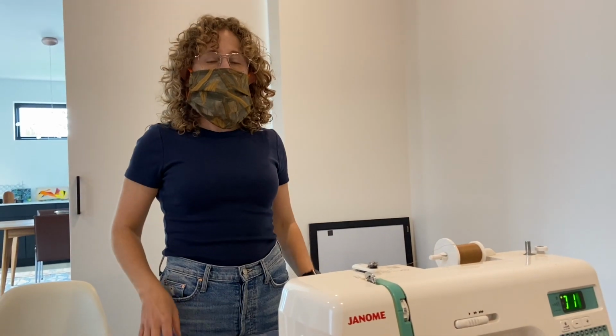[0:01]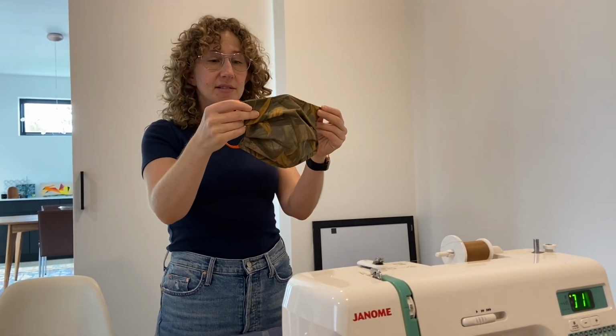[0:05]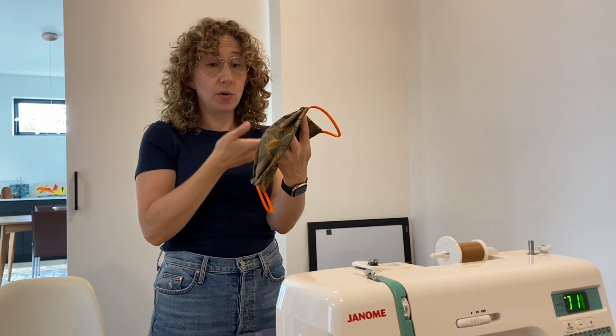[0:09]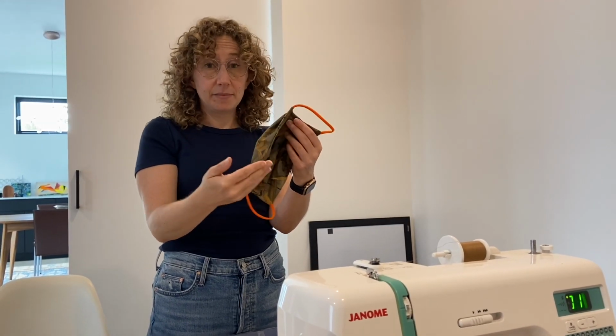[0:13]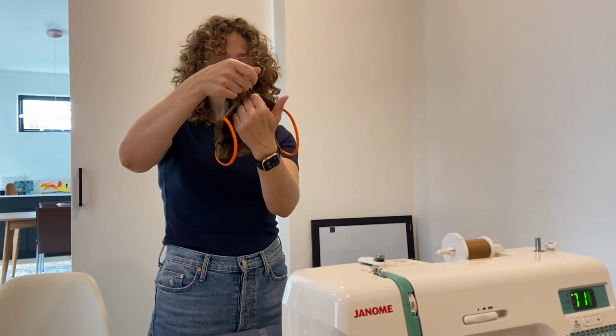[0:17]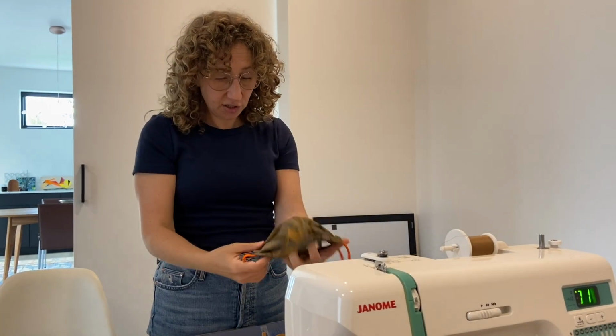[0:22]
Hi, I'm going to show you how to make one of these surgical face masks. There are a lot of variations that someone who owns this mask can put on it to make it fit better. This one in particular has a little cutout so that you can slip in an air filter.
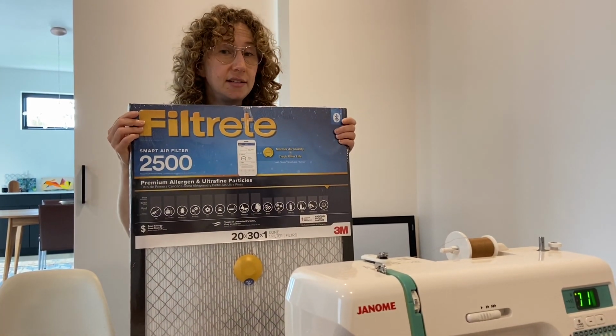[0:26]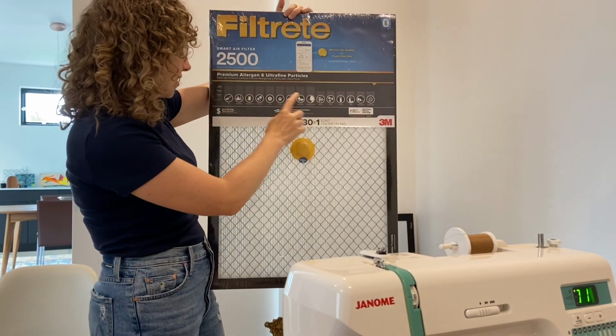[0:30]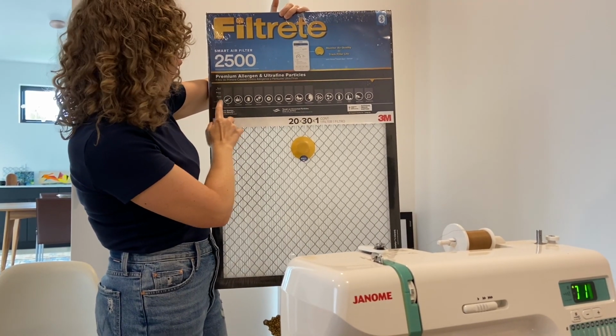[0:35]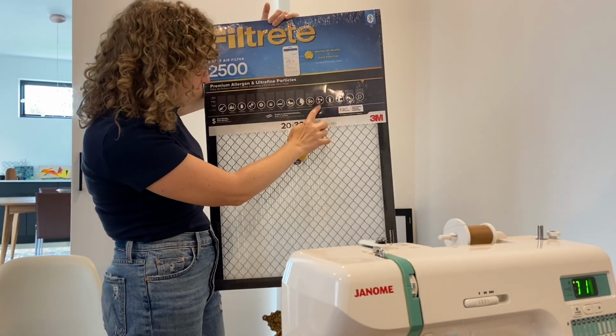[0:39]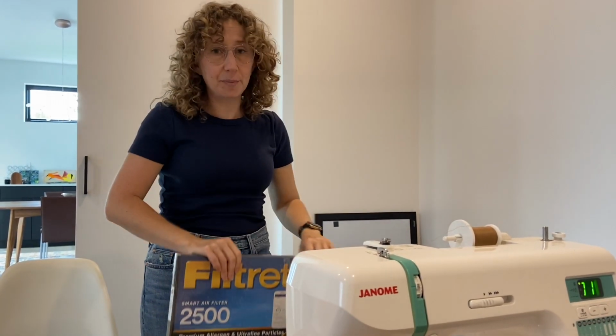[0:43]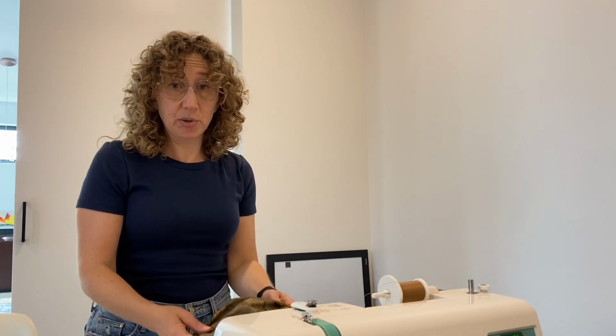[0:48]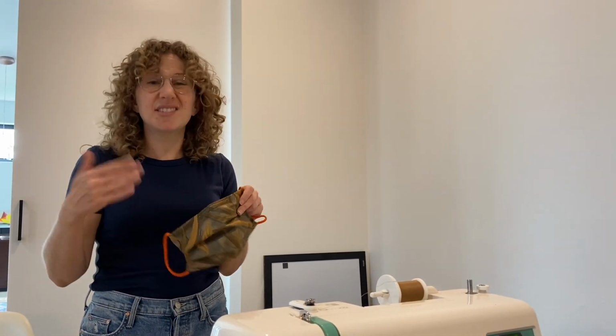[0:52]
The air filter that I'm using is this brand and the 2500 series because it says that it has good, better, best for all of these types of air particles, and virus is here and it's in the better category. A friend of mine who is an ER doctor has asked for those filters to be put in the mask, and I'm finding the mask is still breathable even with that filter.
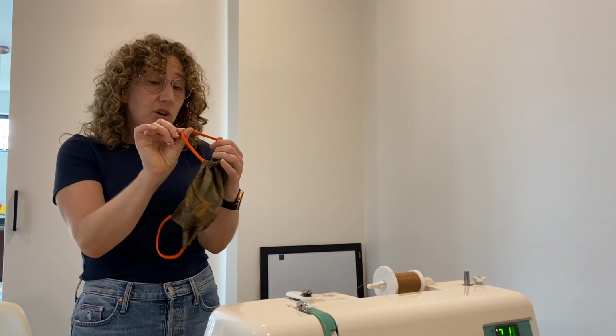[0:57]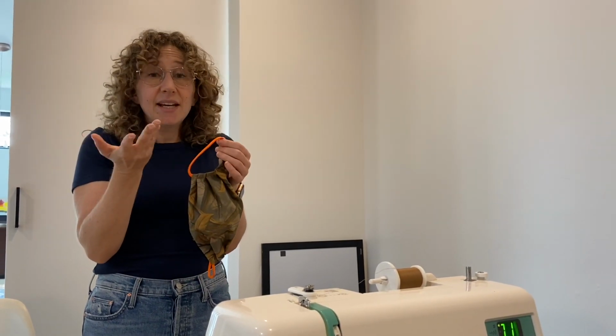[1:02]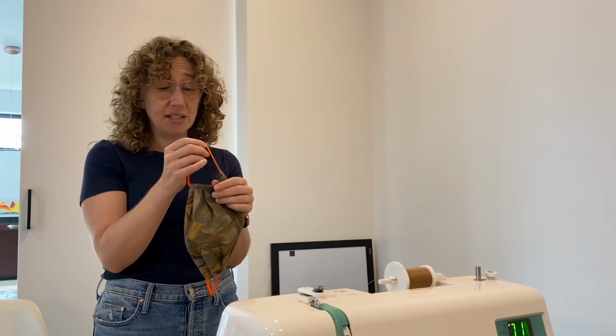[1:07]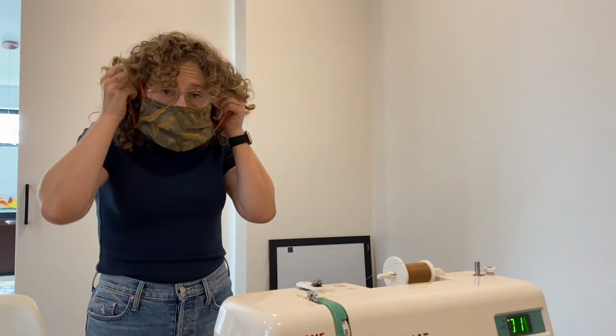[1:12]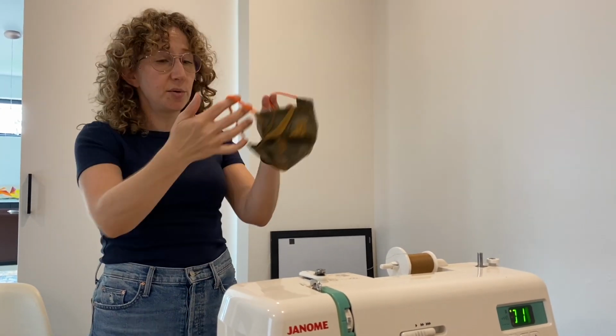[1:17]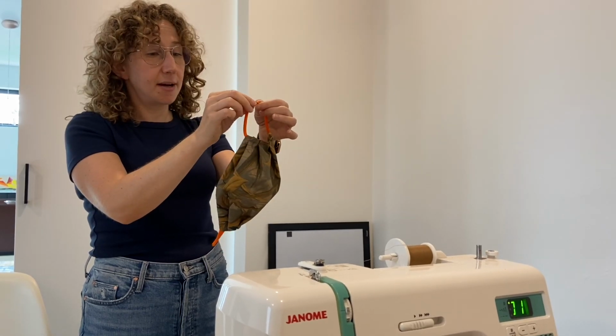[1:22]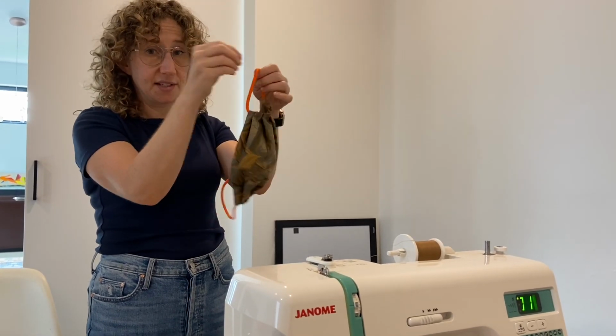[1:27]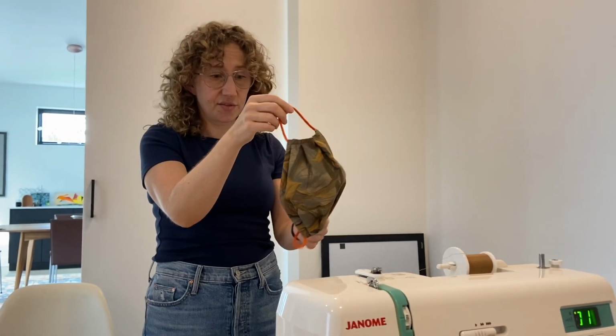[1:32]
I'm using these Lycra bands that someone gave me. Any kind of elastic, sewing elastic probably will do. It will have to stand up to washing. If this loop is too big, I have a very small face, I find this to be pretty loose on me, but I think it's good to sew them like this because someone with a bigger face or a smaller face, this is going to work. For smaller, you can just cut this loop and then tie it to the tightness that works for you.
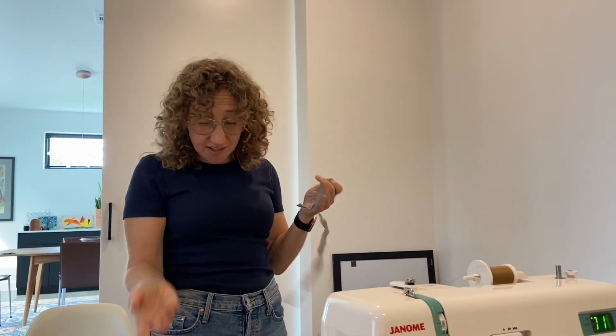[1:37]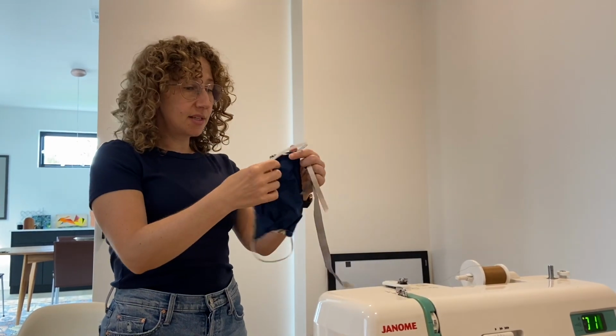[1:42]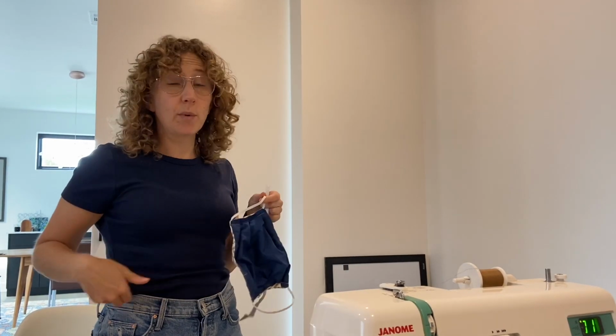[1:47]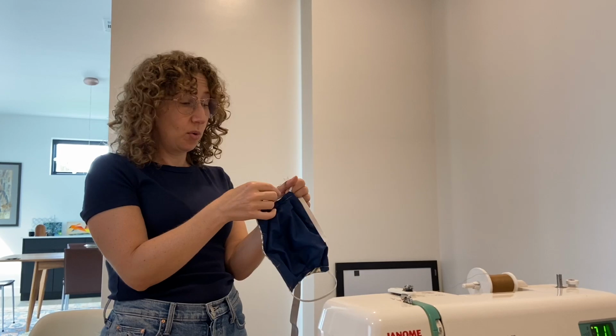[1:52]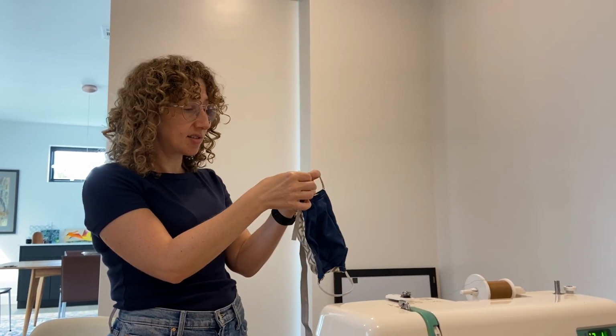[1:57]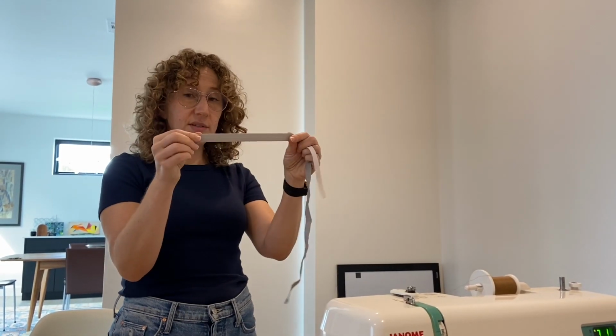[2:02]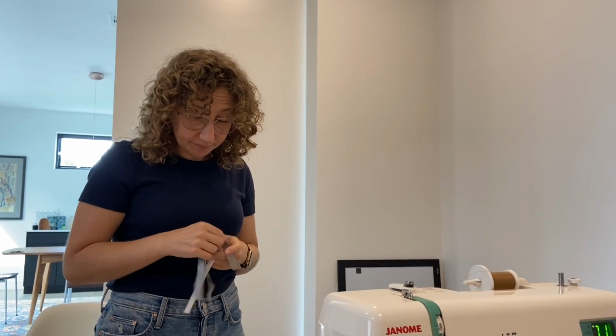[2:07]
Okay, so other types of elastic that I have used, I made this mask and this was 1/2 inch sewing elastic that goes in waistbands. I wanted to make it 1/4 inch so I could use more of it, so I cut it in half, but I don't think that's a good idea because it is starting to fray. Other elastic that you can use, I'm using bias tape, I think would be fine. Yeah, anything you can find.
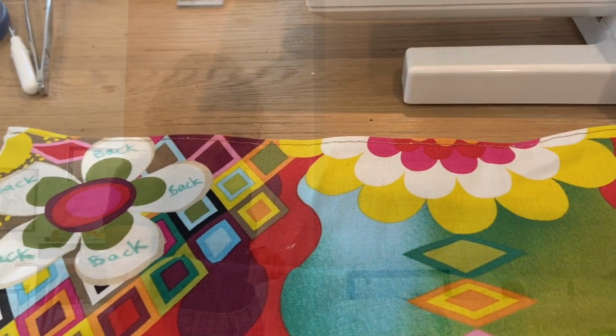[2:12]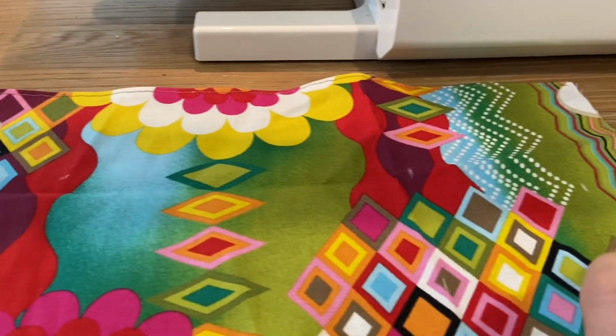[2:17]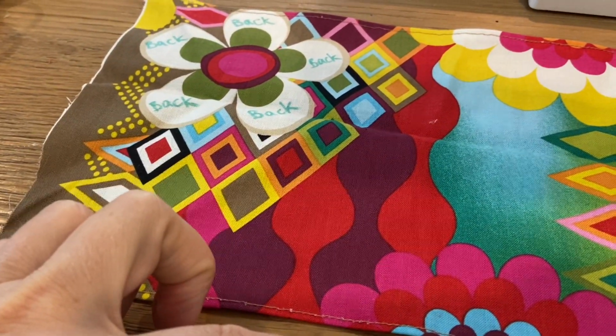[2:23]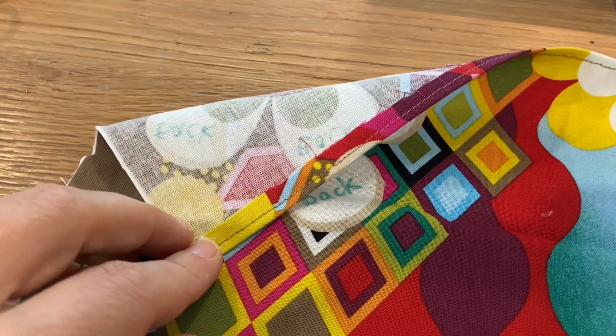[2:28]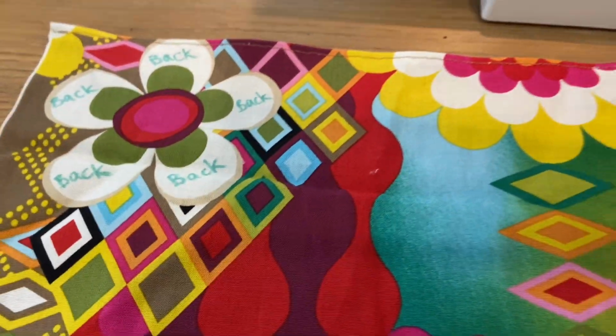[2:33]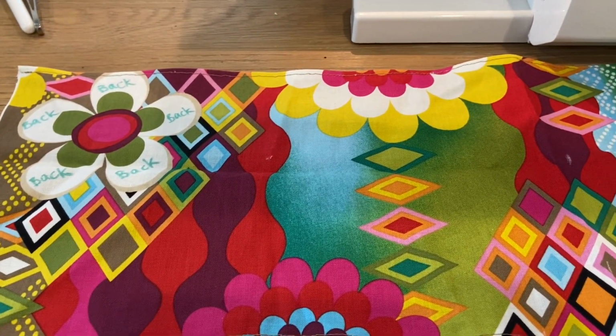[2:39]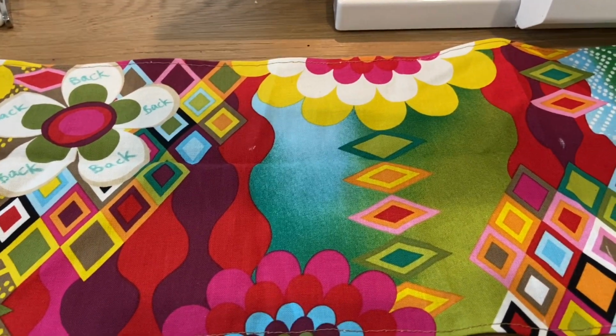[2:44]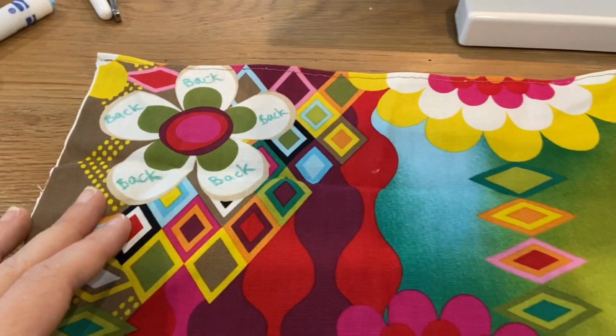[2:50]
Okay, so I have cut a piece of fabric that is 18 inches long and 7.5 inches wide, and I then stitched the long seams closed to finish them. Some people are saying it's better to have 2 different fabrics, one in the back and one in the front, so that people know which side goes on their face and which side goes outward. I find this easier for me, so I just took a fabric marker and wrote back on the side that's going to be the back.
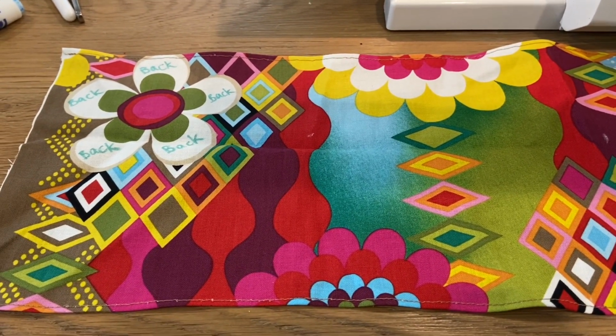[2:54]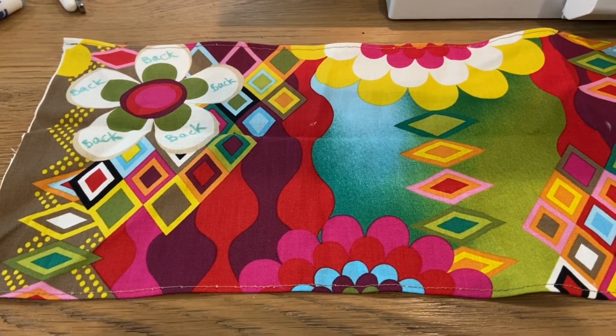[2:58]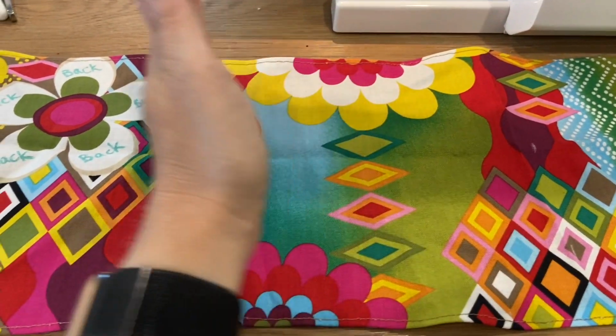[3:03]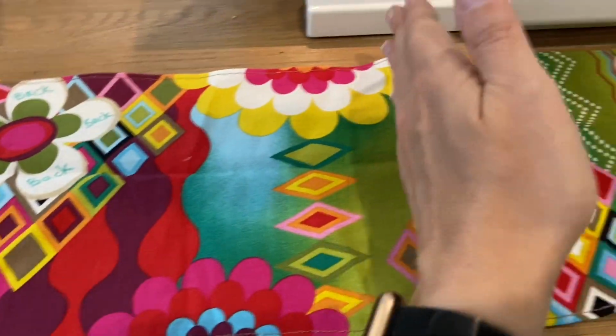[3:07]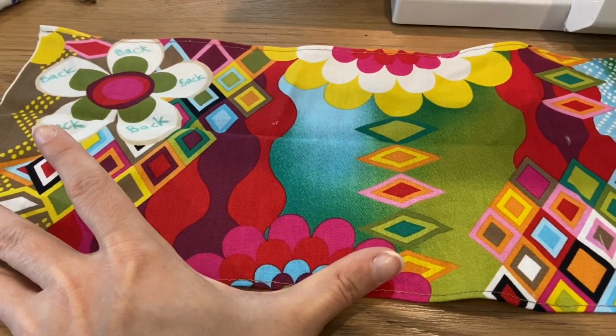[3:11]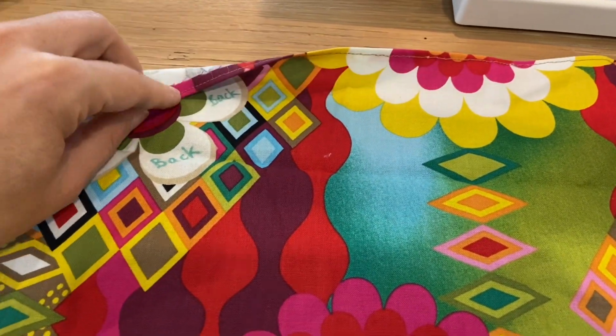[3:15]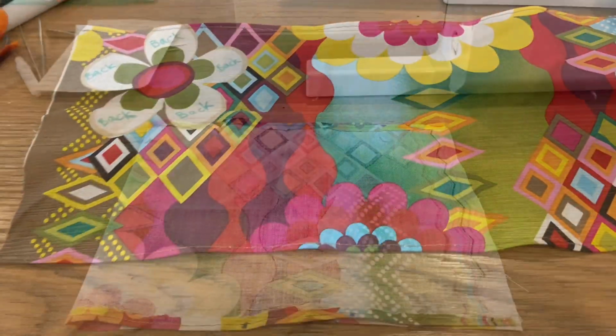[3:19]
But if you want to use 2 different fabrics to indicate that, you would just cut this in half, and one fabric would be of that type and this side would be the other type of fabric. So that would be 9 inches each and still 7.5. And the 7.5 is just to account for this seam allowance.
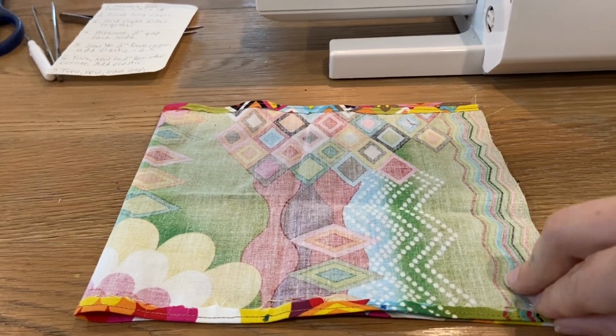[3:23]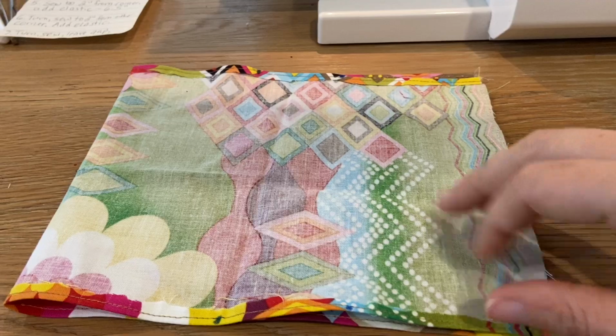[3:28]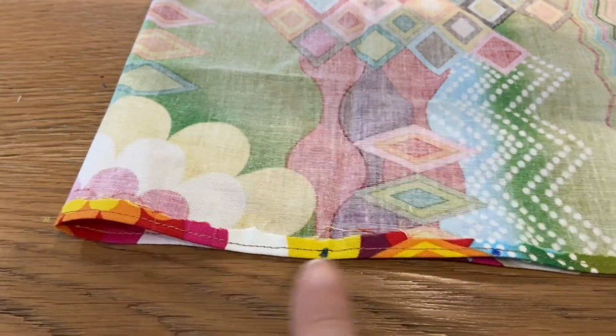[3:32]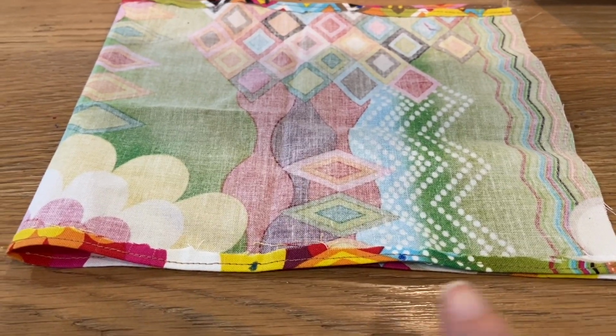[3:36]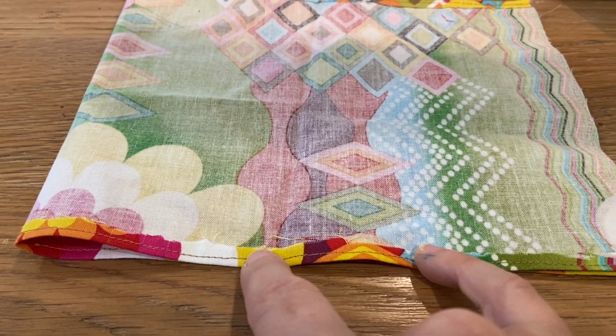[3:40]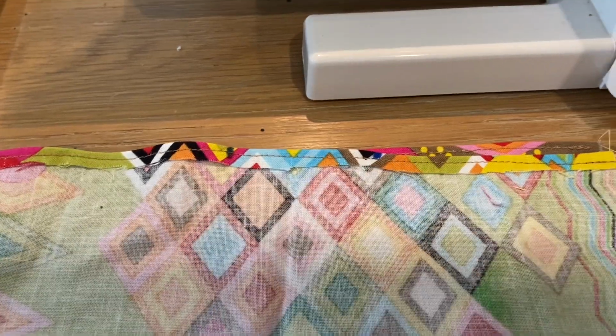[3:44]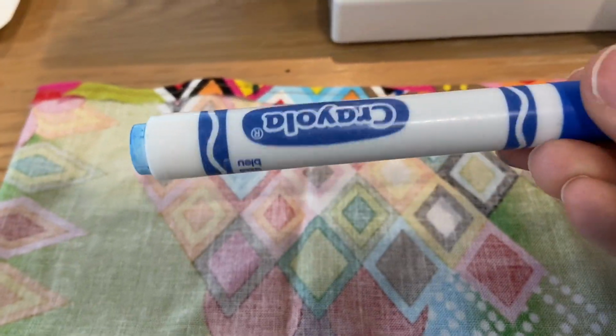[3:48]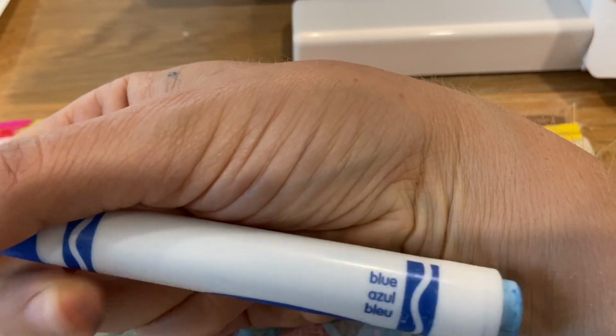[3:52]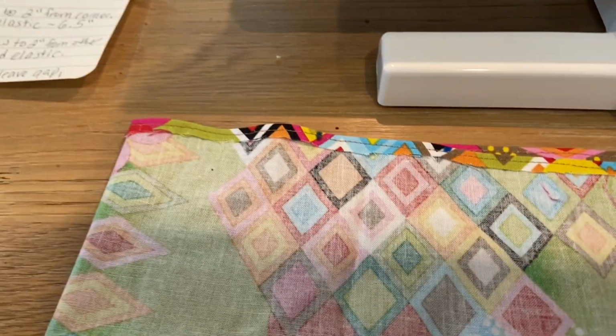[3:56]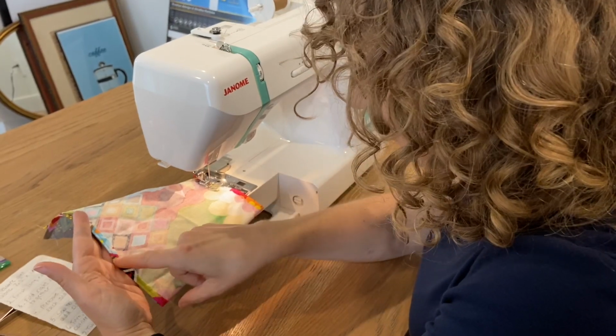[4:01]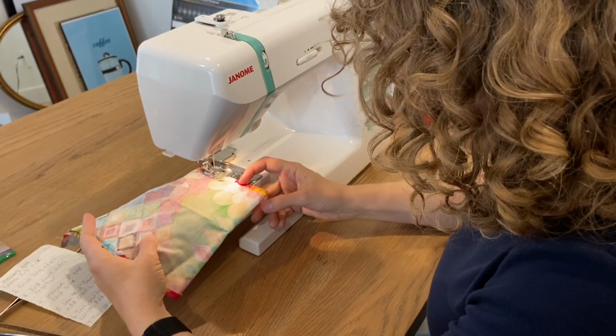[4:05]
Okay, so now I folded my piece of fabric in half with the right sides together, and I have measured and marked. This whole piece is about 8.25 inches, so I just measured approximately a 2-inch gap in the middle on the bottom and the top. And I just used a Crayola washable marker that my kids use because it should wash out in the wash, and if it doesn't, who cares?
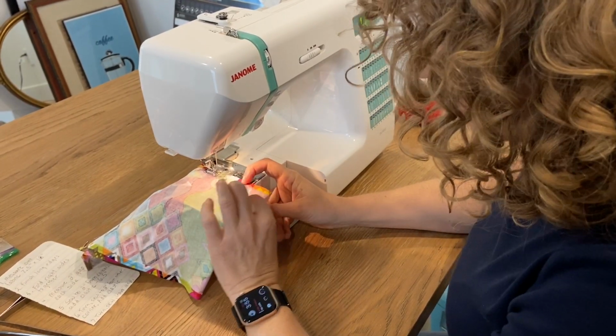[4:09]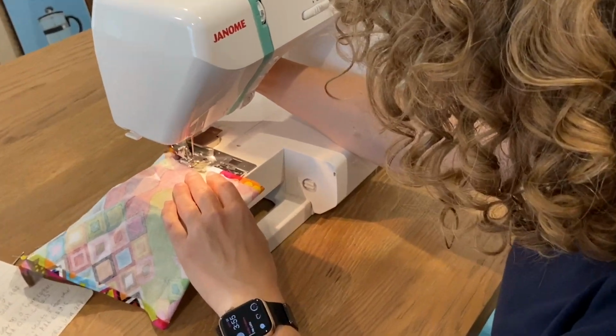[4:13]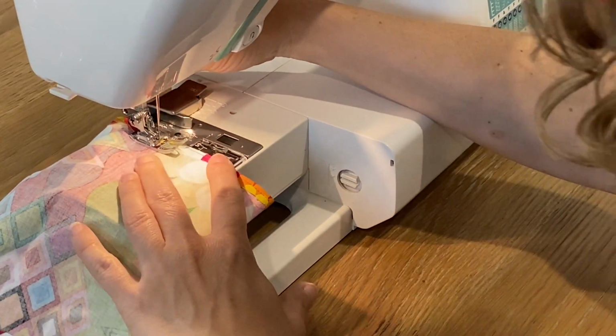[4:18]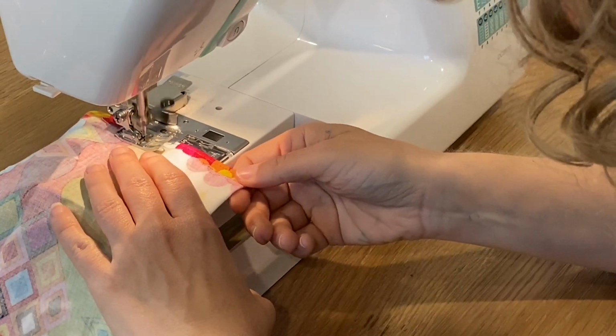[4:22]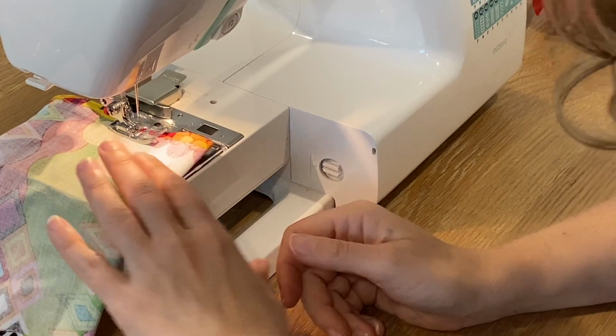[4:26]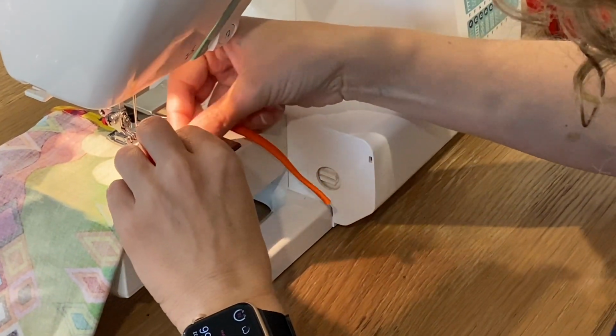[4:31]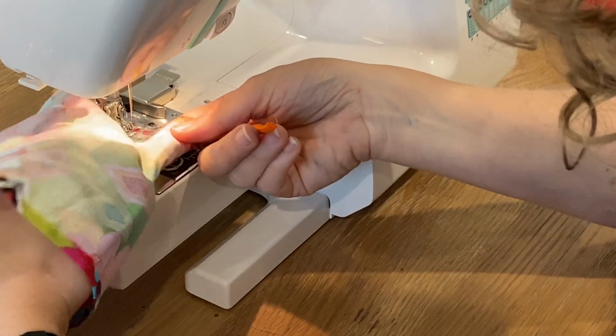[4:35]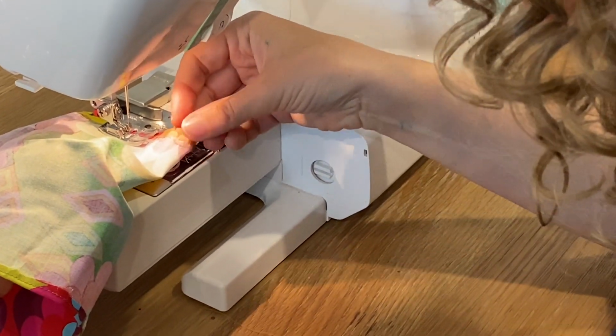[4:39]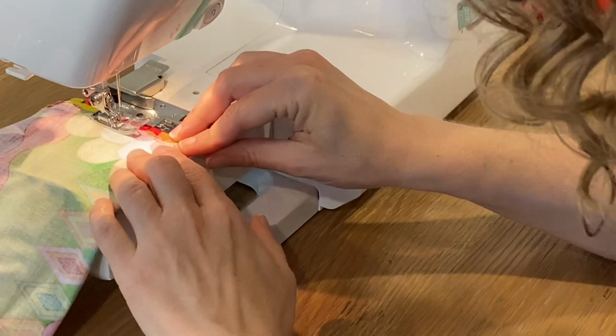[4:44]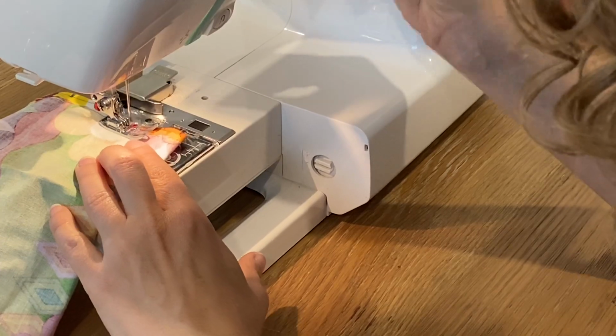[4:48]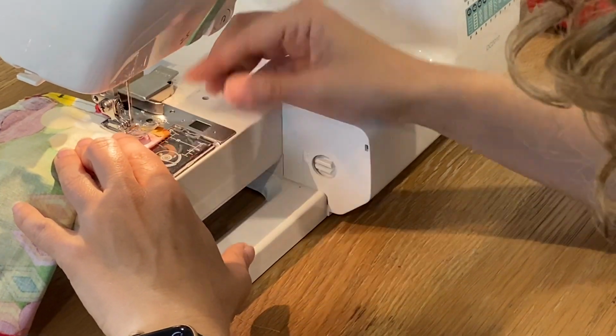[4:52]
Now I'm going to start sewing from one of my marks, and I'm going to sew to about, not very far because I need to leave myself enough room to insert the elastic. So I'm giving myself a 1/4 inch seam allowance, so that's just to the end of the presser foot. I learned the hard way that if you get too close to the end, it makes it very hard to insert the elastic. And just pulling the elastic to the end here. Then I'm going to back stitch over the elastic a couple times to make sure that it's really secure.
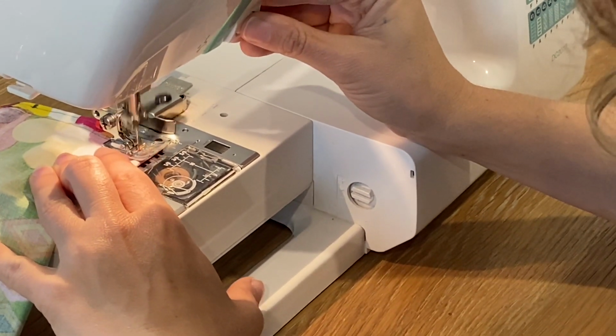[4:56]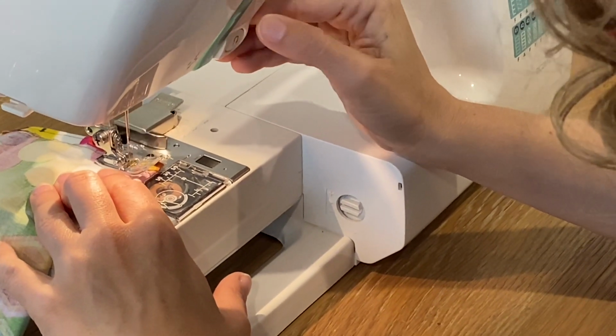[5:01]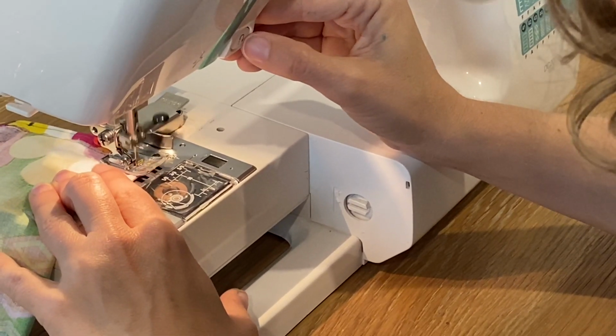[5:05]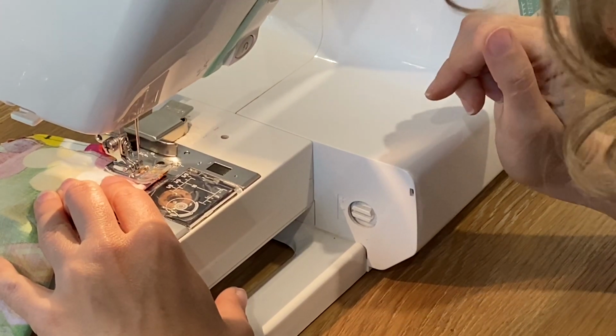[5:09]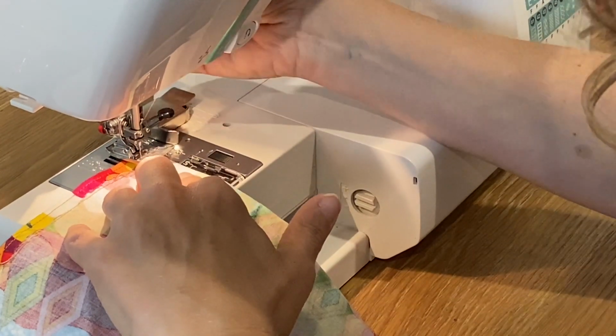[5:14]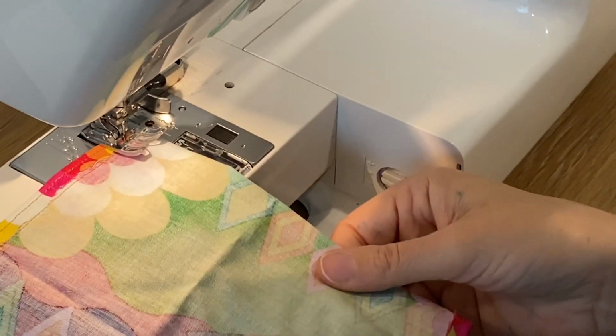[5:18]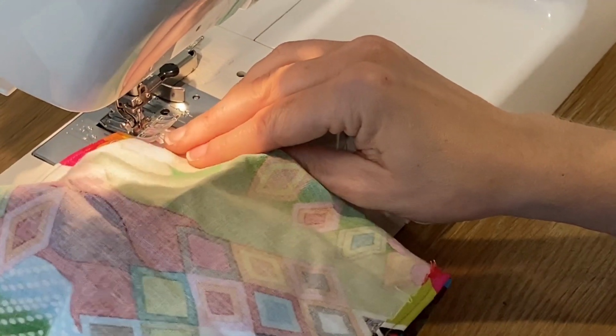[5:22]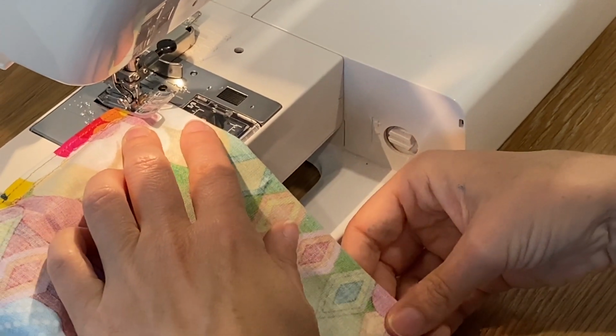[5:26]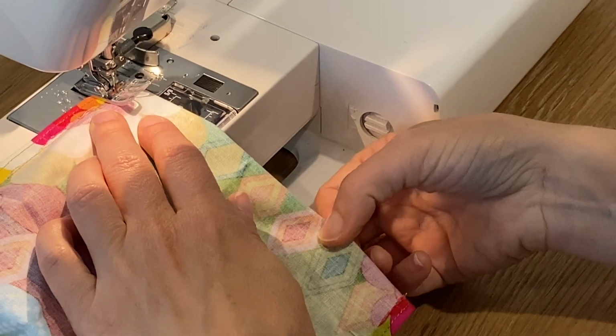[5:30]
I'm going to drop my needle, lift the presser foot, turn it, and then drop my presser foot, so then I'm back at a 1/4 inch seam allowance. Going to just push that elastic out of the way to make sure I don't accidentally sew over it. And then I'm going to go down to the next corner, and again, I'm going to stop around here.
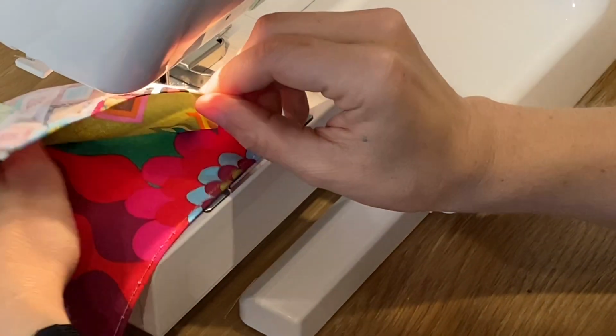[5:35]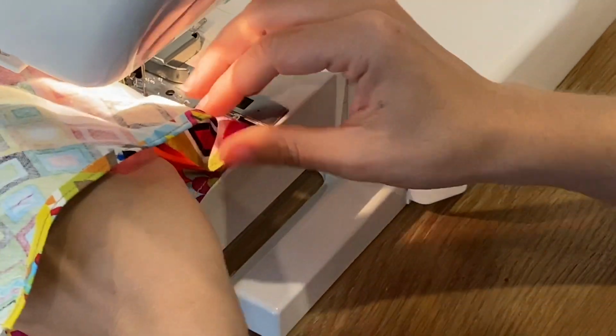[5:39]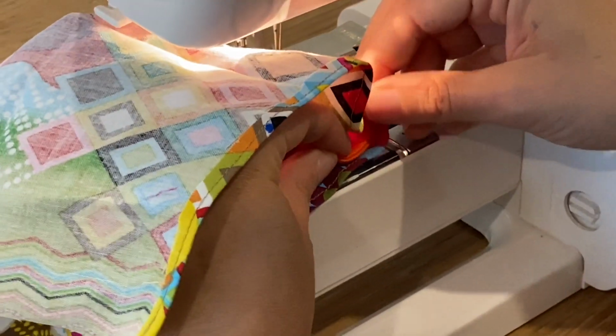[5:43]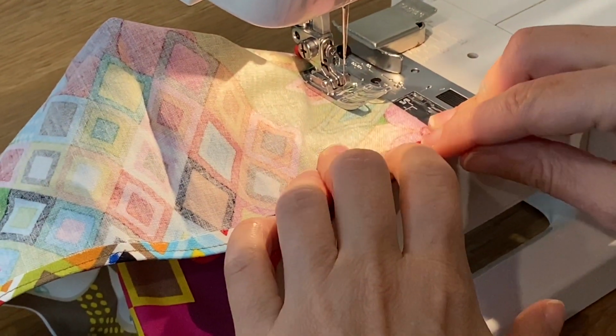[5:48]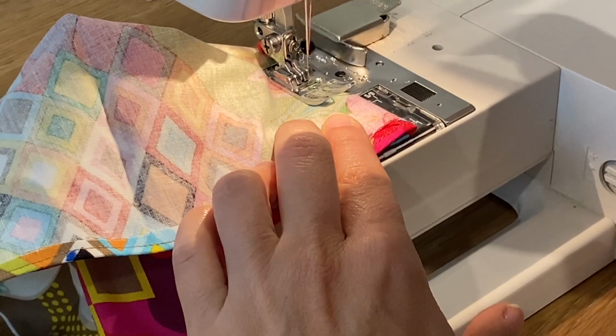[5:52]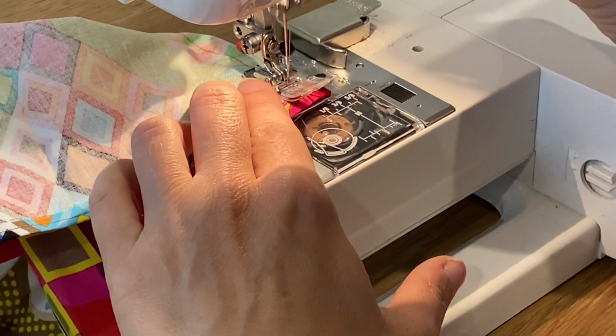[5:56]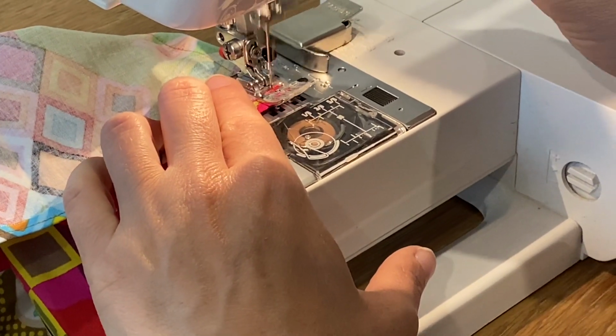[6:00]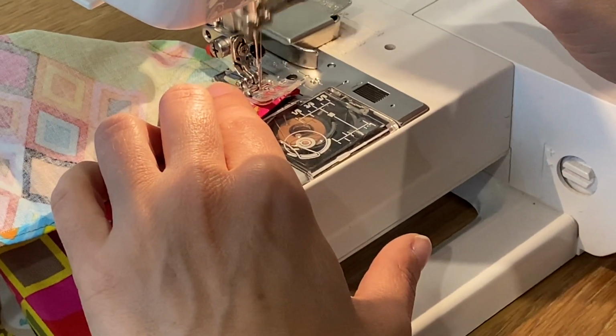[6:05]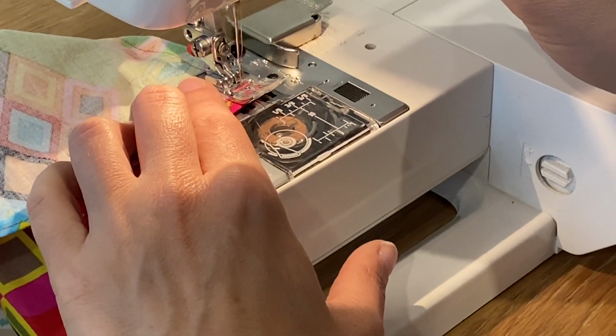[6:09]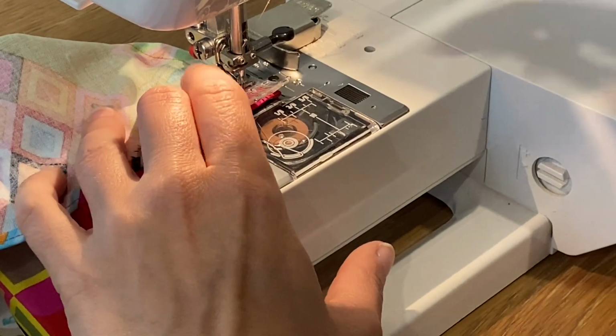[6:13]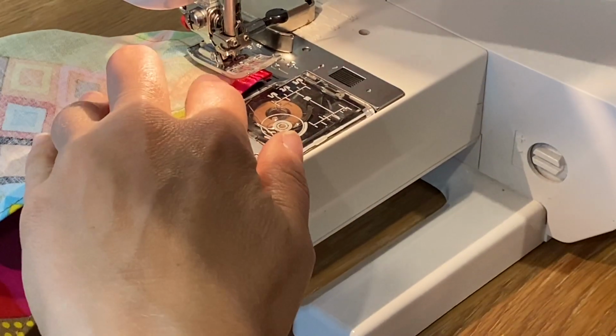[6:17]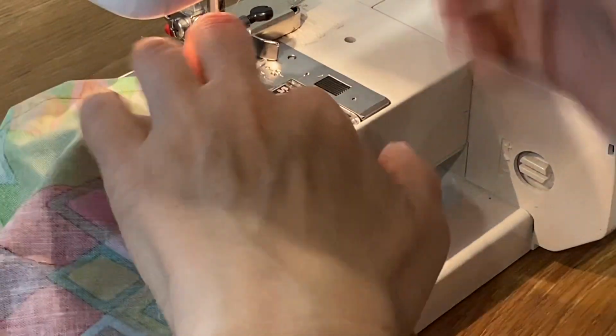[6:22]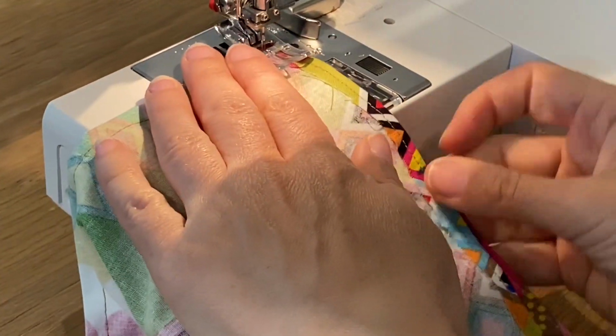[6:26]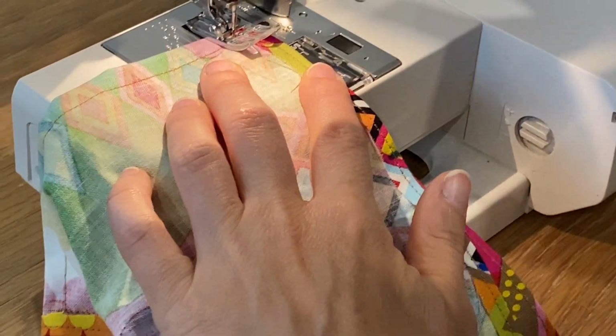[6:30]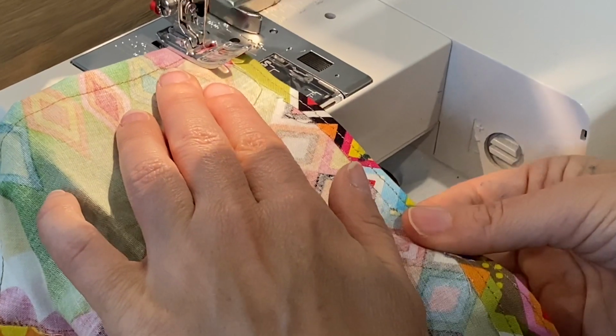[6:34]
Okay, now I'm going to take that elastic from the other corner and I'm going to put it into this corner. And I'm going to sew down. Oh, did I back stitch too early? Okay, I'm going to back stitch over it a couple times. Okay, I'm going to turn. Oh, need to go down one more turn of the needle. Okay, now I'm going to do the same thing, but I'm going to stop at this mark right here. And I'm going to back stitch when I get there.
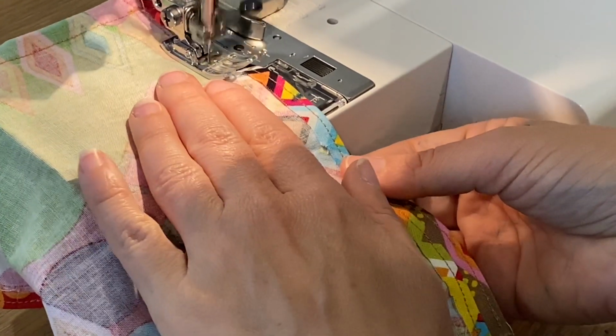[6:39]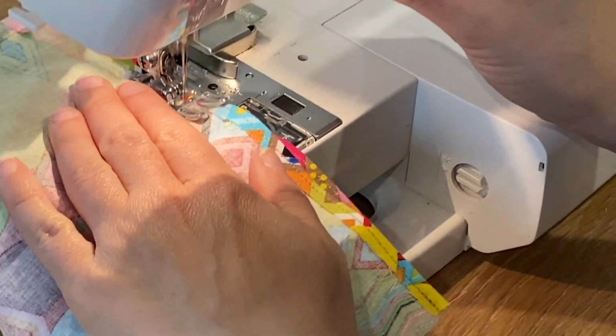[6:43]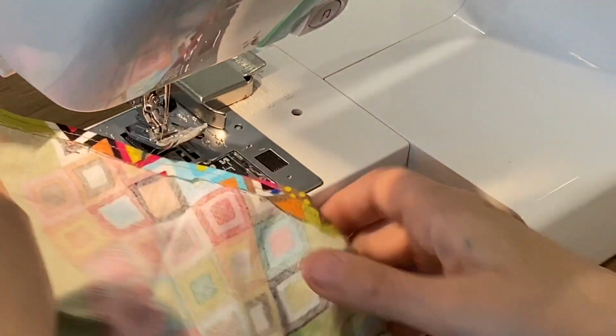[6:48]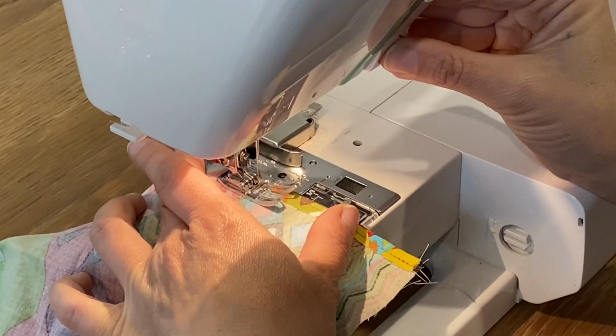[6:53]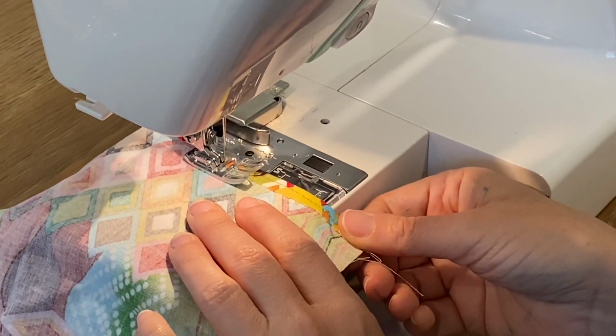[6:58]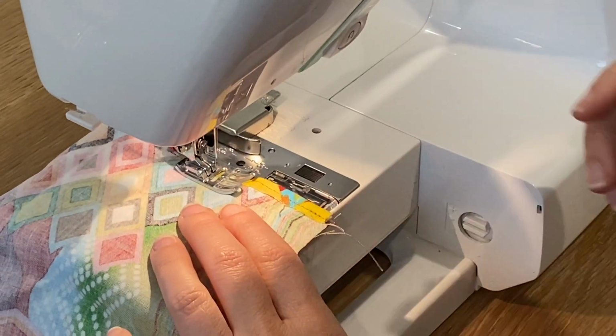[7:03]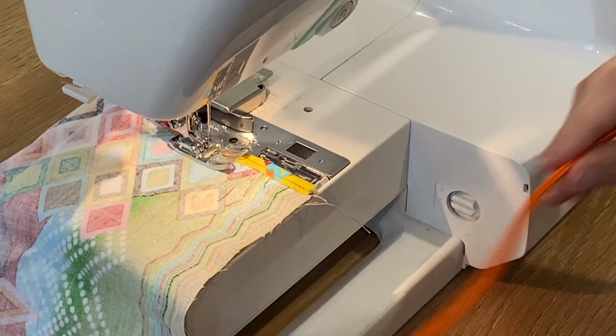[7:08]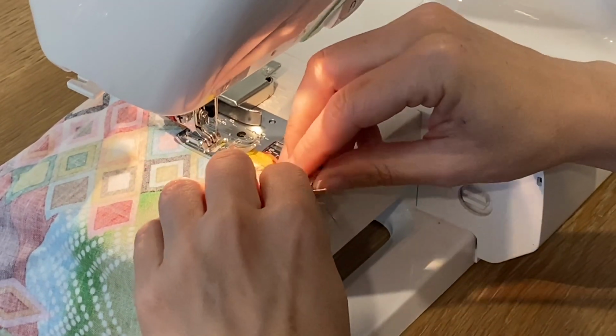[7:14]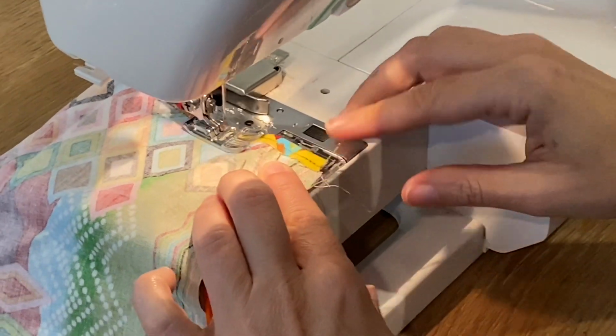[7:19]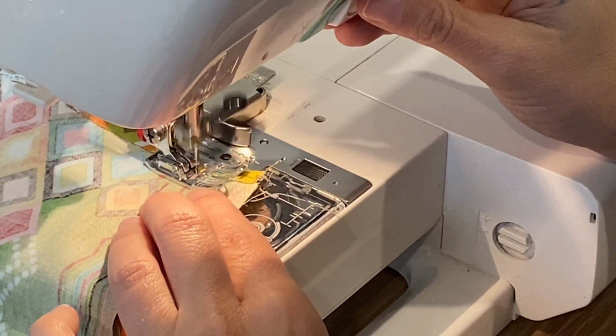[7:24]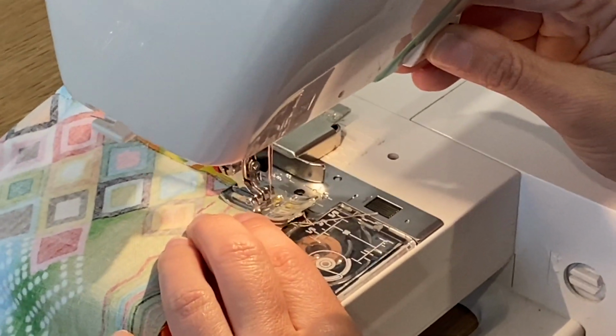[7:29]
Okay, I'm picking up after that gap. I started at my second mark and I'm just going to go a little bit down because I need to add my next elastic. So I'm going to stop right about there. I'm going to take another piece of elastic, put it in here. I'm not using pins, but you're totally free to use pins if it helps you. Same thing, back stitch over the elastic a couple times to really secure it.
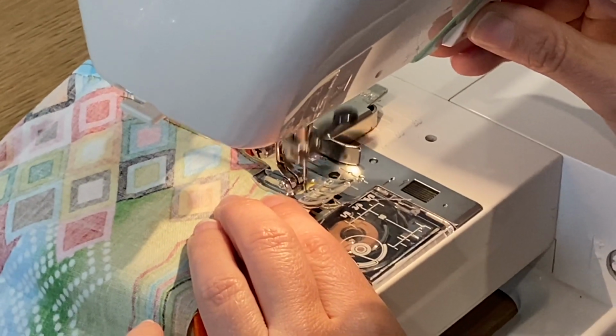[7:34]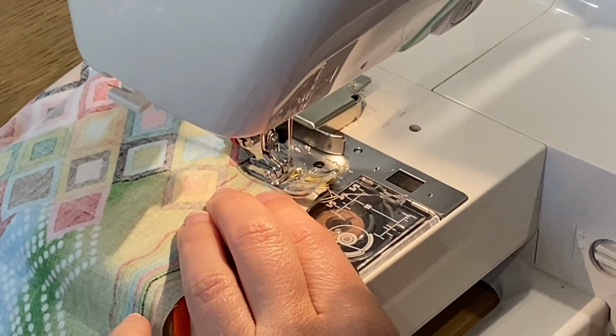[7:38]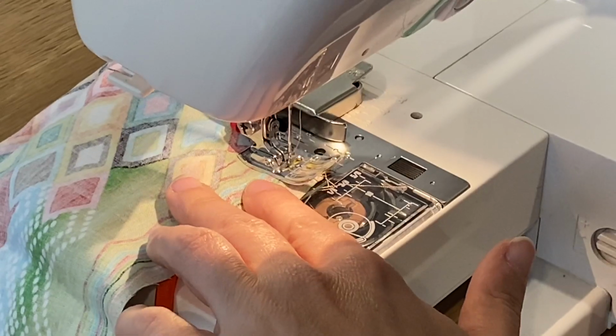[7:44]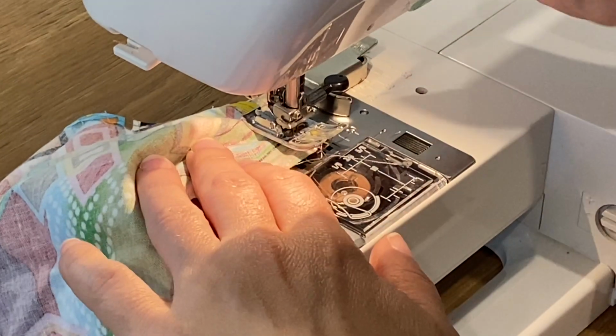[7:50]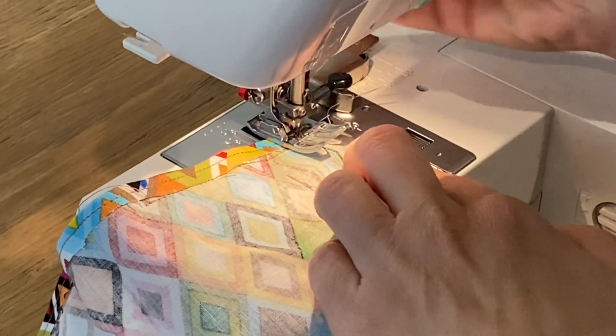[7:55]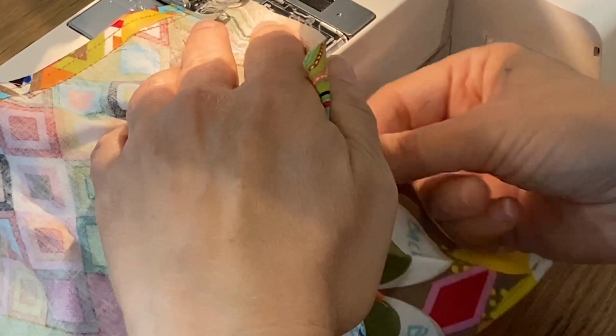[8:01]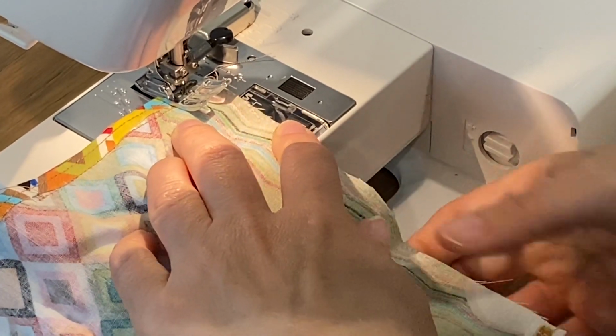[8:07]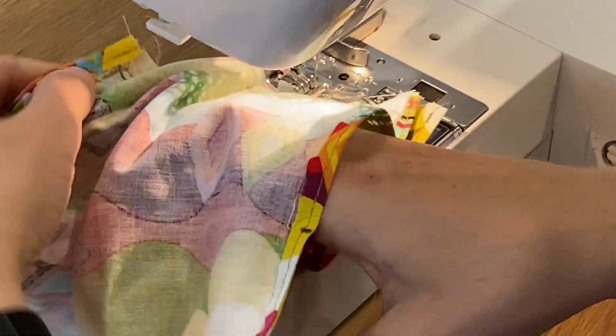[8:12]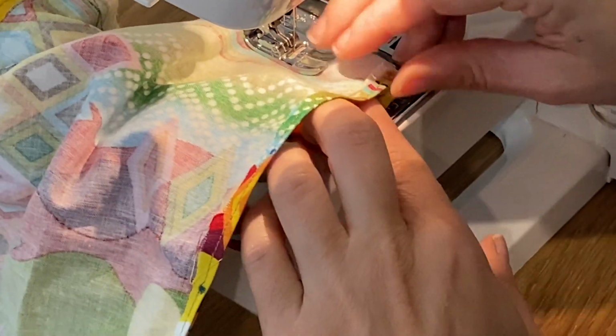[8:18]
Okay, and drop your needle. Oh, looks like I need to do it one more time. Maybe even one more time. Okay, and make sure again to get your elastic out of the way. Line these up again and sew down until I'm about here. Okay, now I'm grabbing the elastic that I had just sewn into the corner and I'm pulling it down to secure it into this corner.
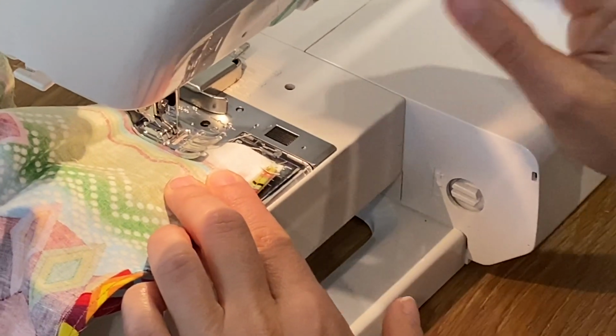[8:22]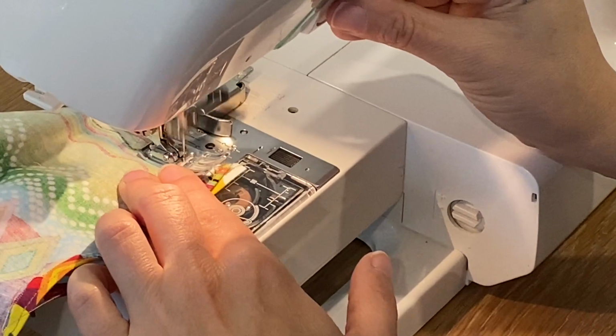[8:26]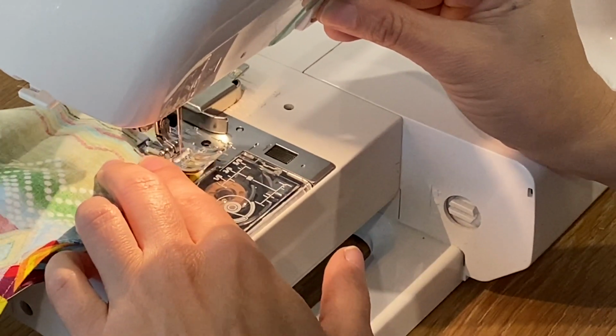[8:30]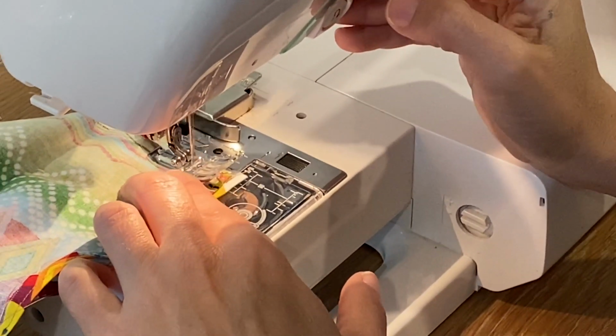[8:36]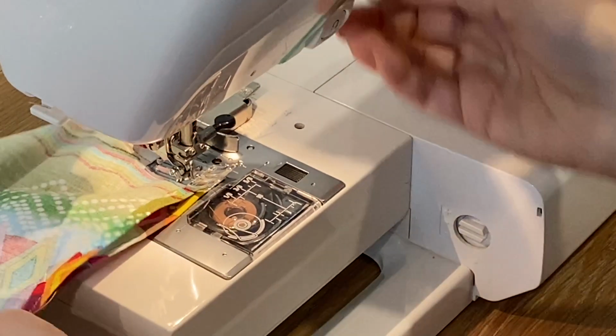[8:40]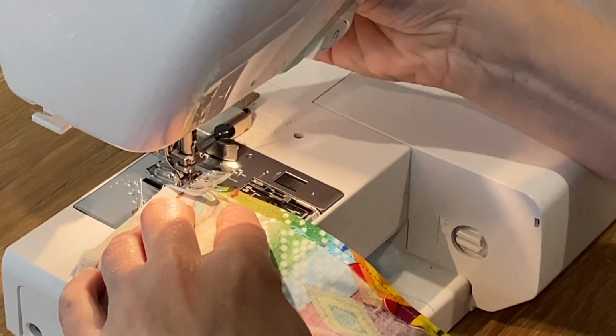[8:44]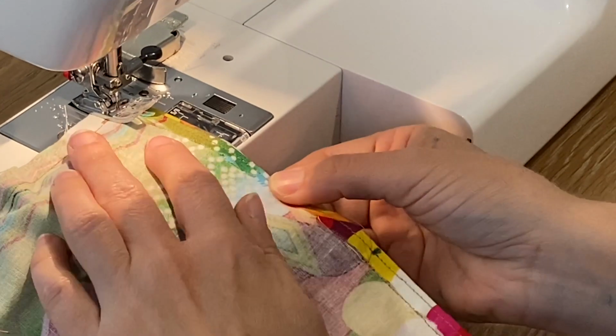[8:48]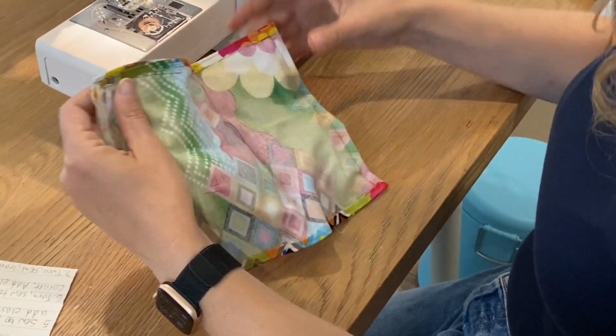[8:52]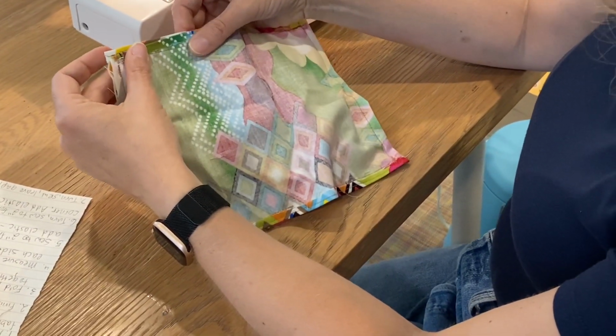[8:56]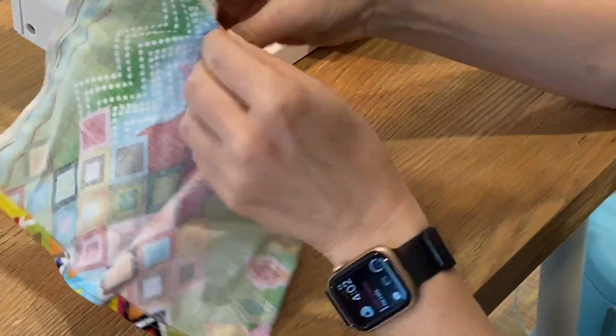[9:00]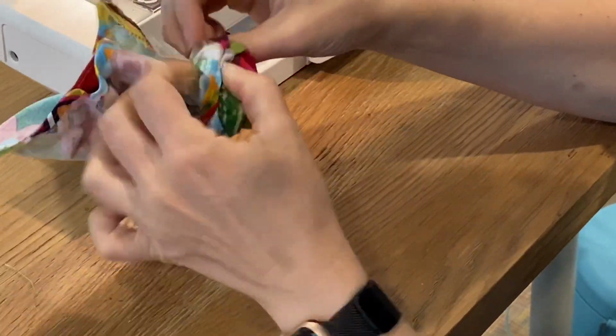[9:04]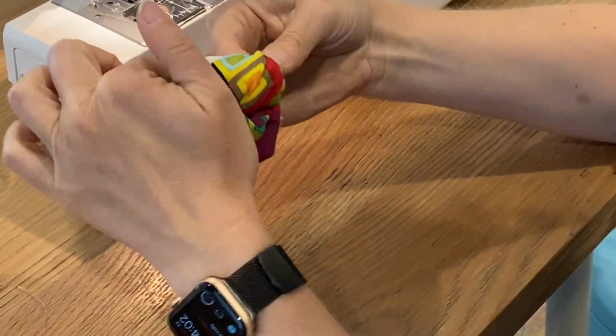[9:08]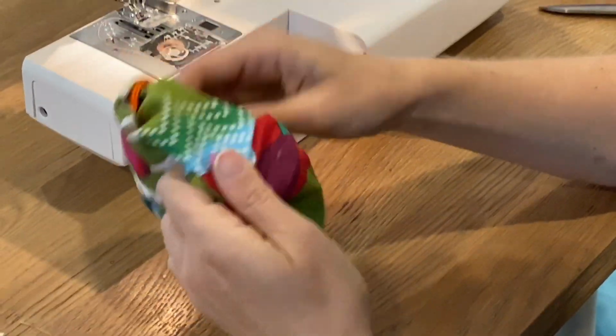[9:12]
Okay, now I'm gonna sew down to this gap. Okay, so I finished sewing to the gap, and of course I back stitched right when I got to each gap. Now you're gonna flip this inside out. Now for some reason, I thought I left enough, and maybe I did, but they are pretty small gaps. Well, I guess it turns out pretty easily with those 2 inches.
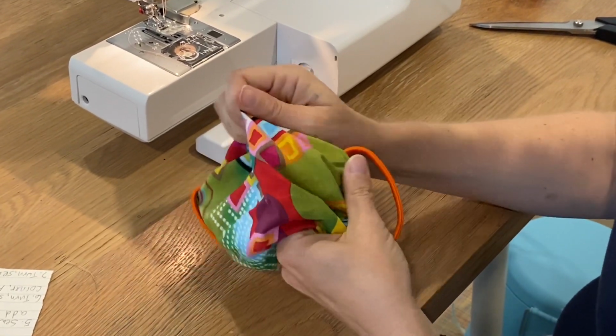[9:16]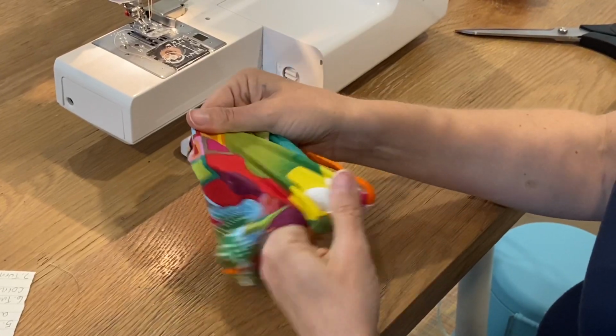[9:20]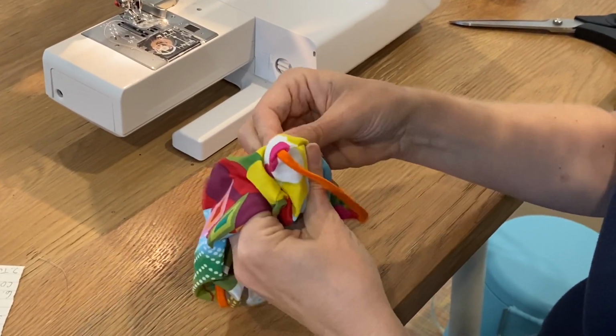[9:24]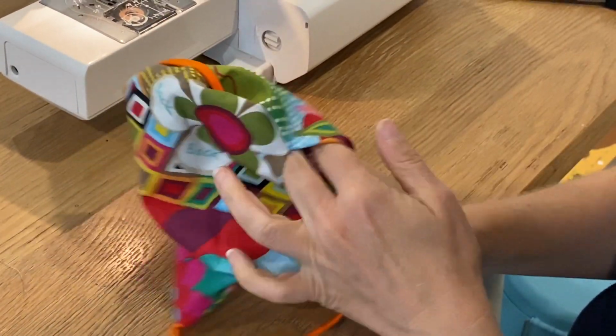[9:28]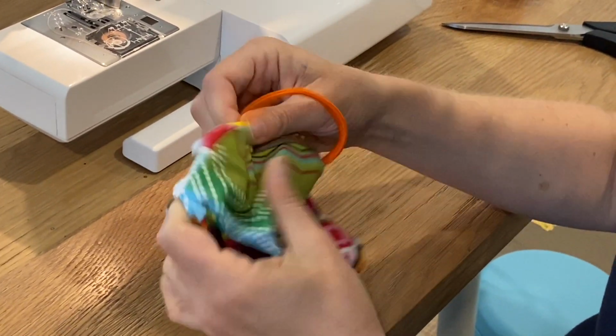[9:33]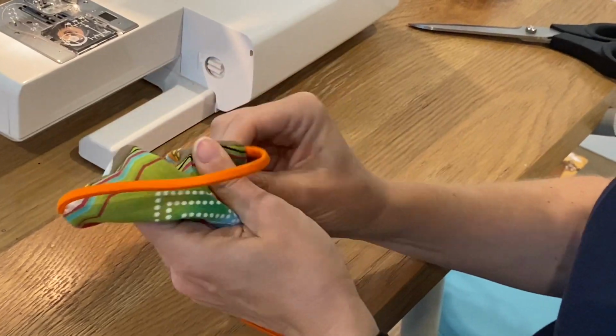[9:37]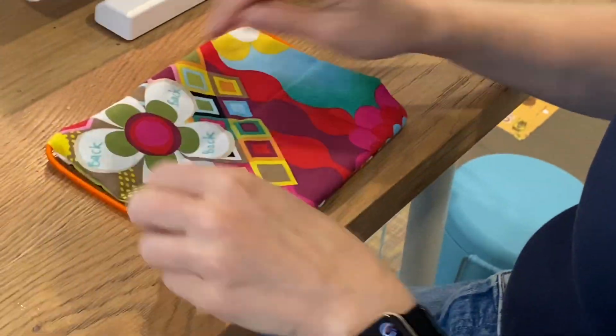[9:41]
So I'm turning them now right side out, pressing into the corners with my finger to really get that out, pressing the seams open with my fingers on both sides. Okay, this is going to be the mask.
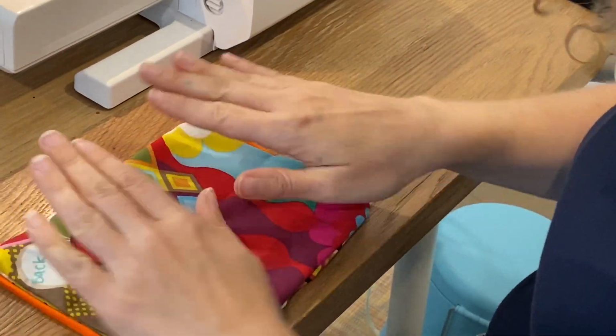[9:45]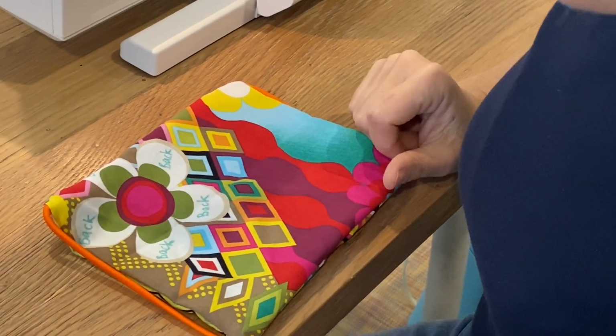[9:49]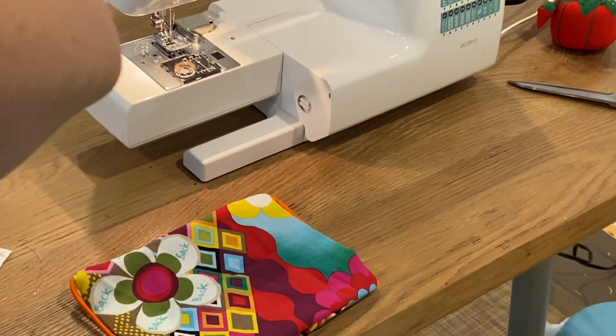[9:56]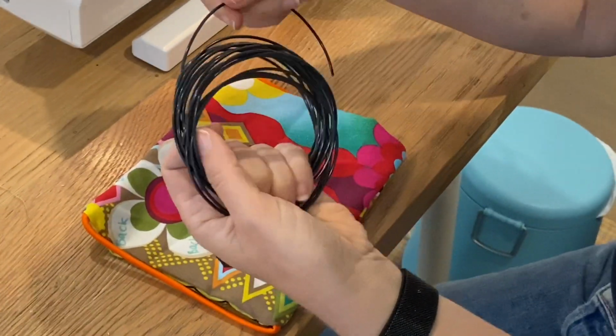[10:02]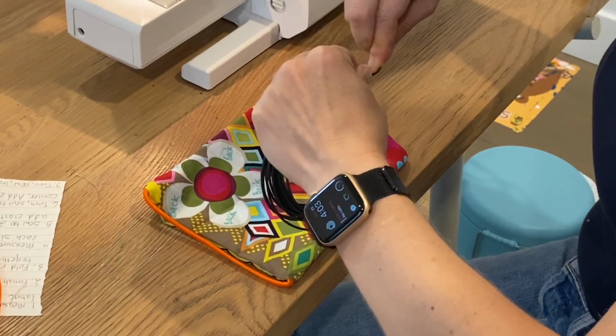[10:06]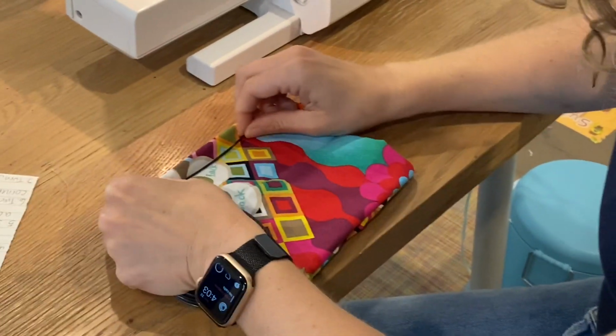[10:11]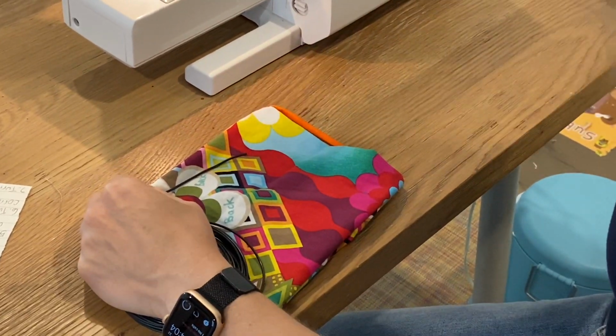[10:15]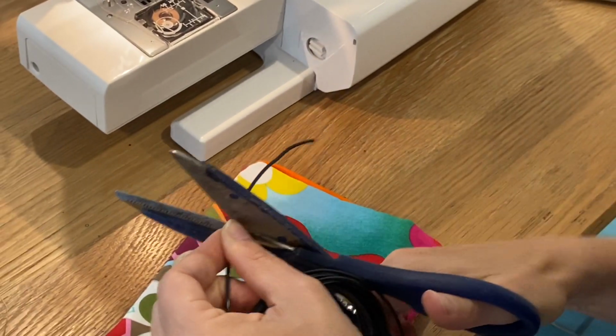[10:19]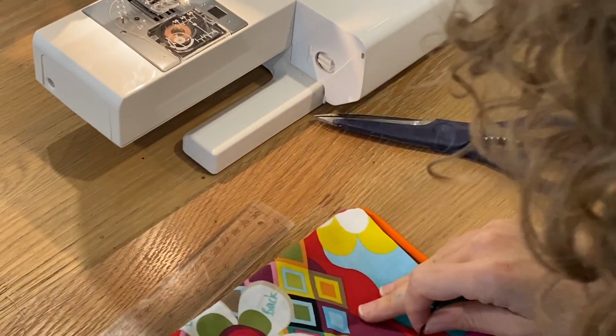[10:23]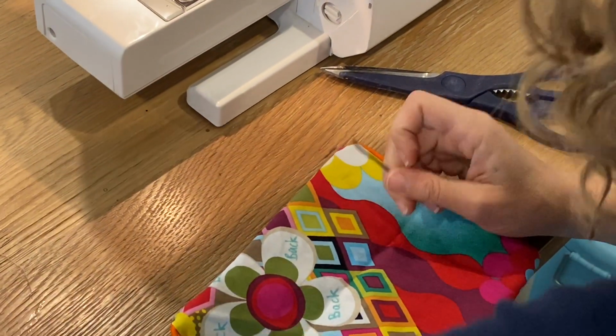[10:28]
Now, I am going to cut a piece of little bendable wire that I just had lying around the house to use as the nose piece. So, let's see, I'm gonna straighten this out a little bit. This was just in a craft kit for my kids. I think I'll do it to here. So that's like what, 3 inches? Let's see. Yep, just about 3 inches.
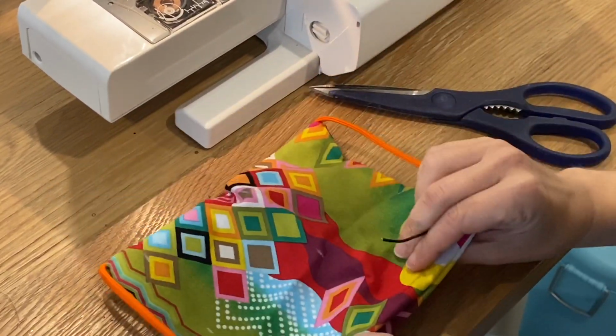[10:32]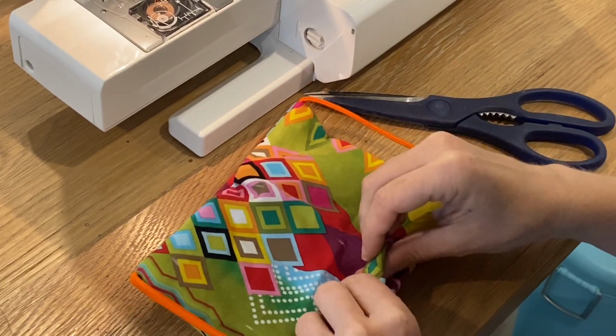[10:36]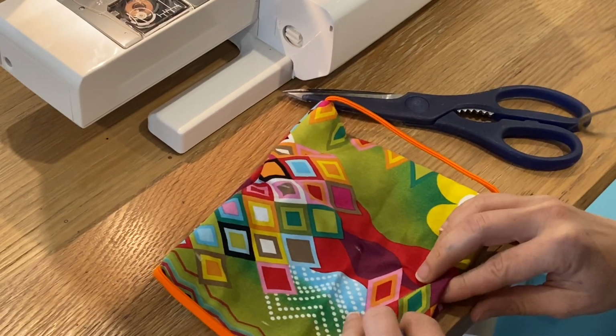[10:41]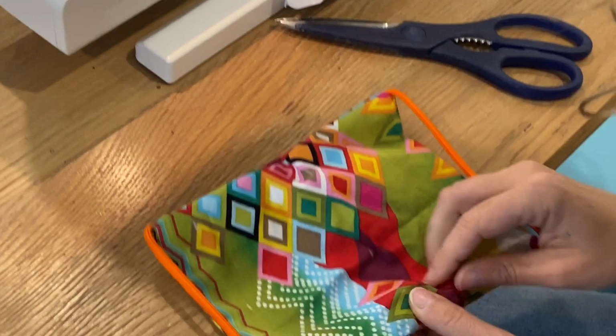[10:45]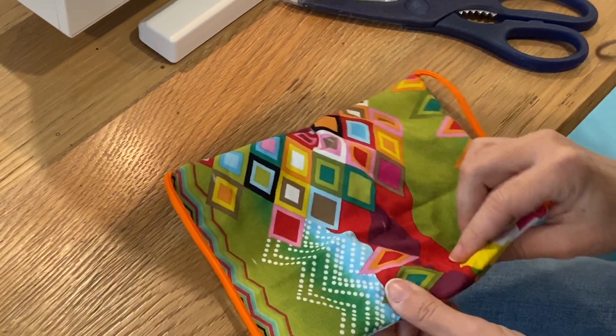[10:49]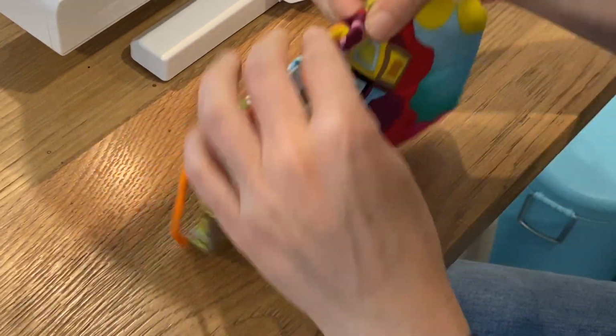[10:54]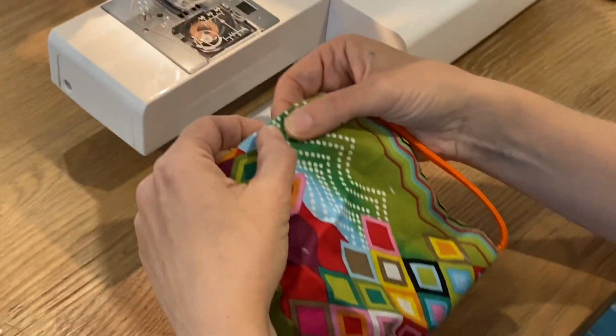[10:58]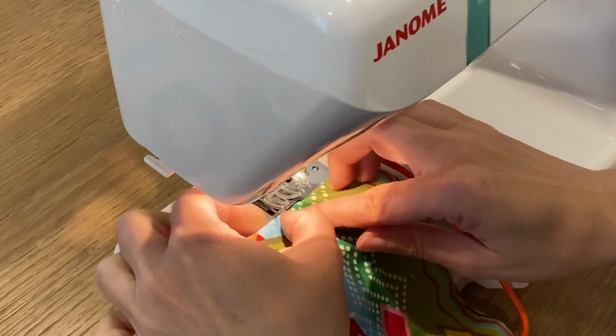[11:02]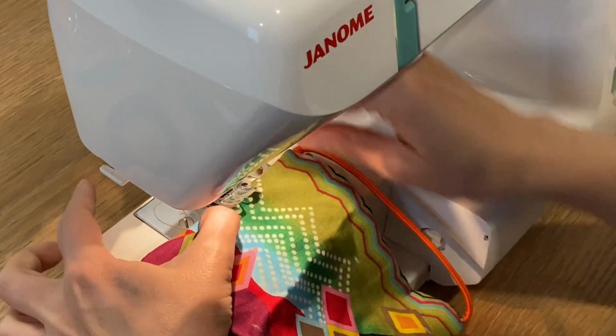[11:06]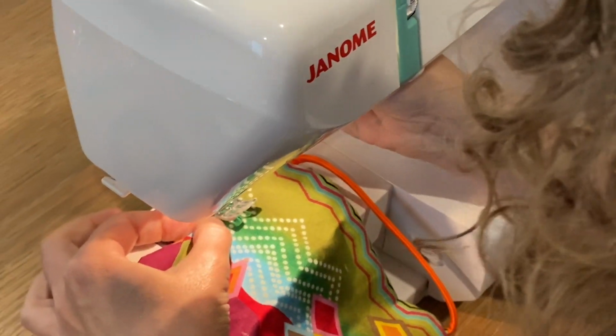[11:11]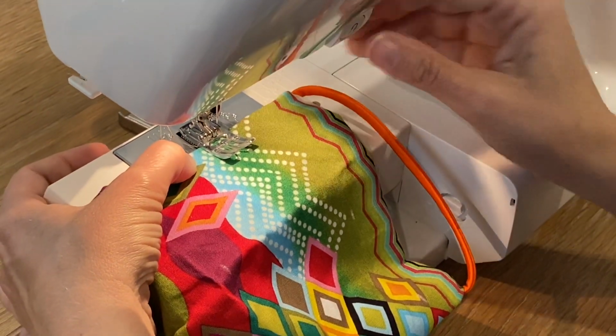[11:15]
Now I'm going to go to what will be the top of my mask, and I'm going to put this little piece of wire in here. And I'm going to push it all the way up to the top, and hold on to it so it doesn't get lost, although if it does get lost, it's not a big deal. And now I am going to secure it into place. So here's the end of it, right where my fingernail is. I'm going to sew right there. Now I'm moving my finger back, but holding on to the piece.
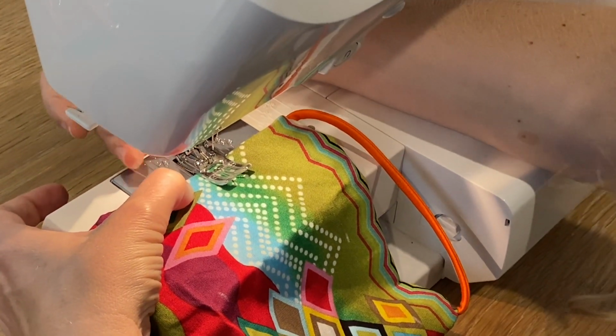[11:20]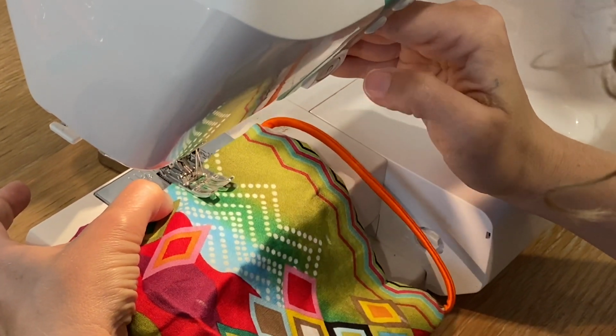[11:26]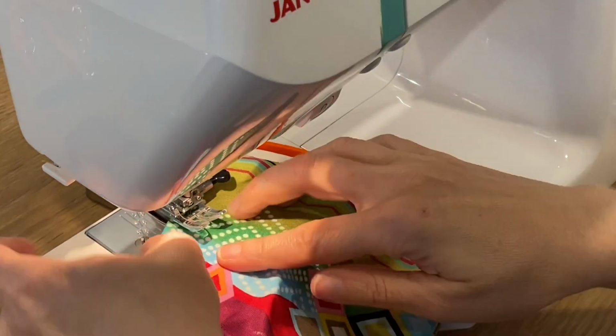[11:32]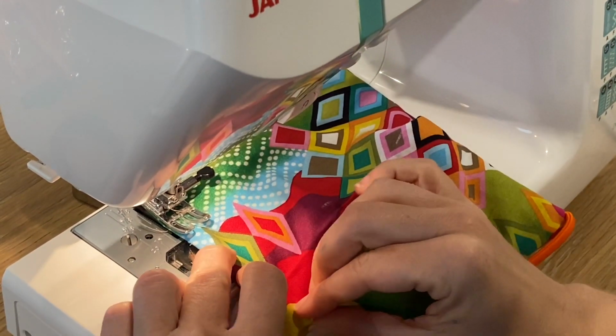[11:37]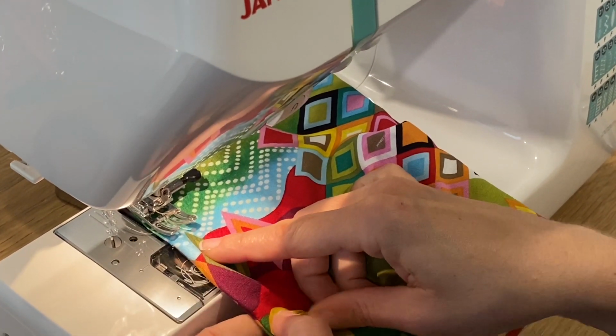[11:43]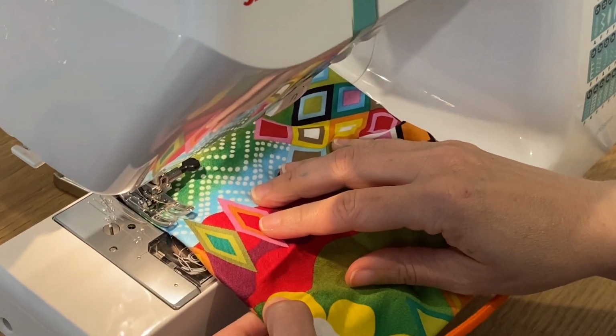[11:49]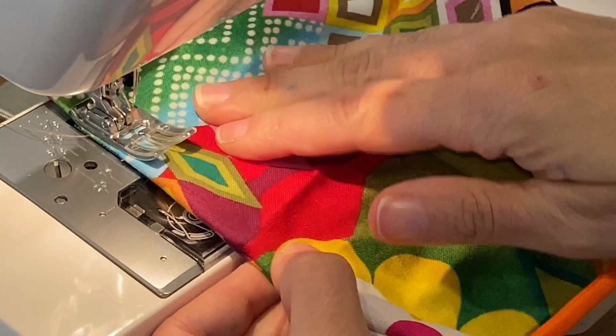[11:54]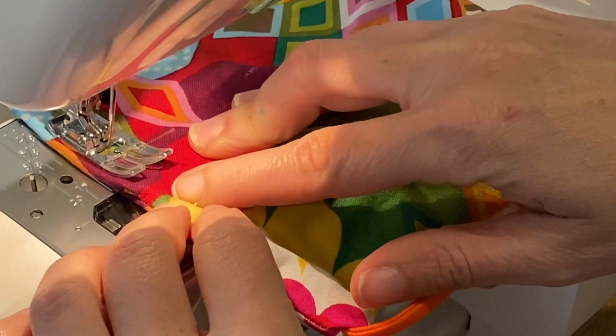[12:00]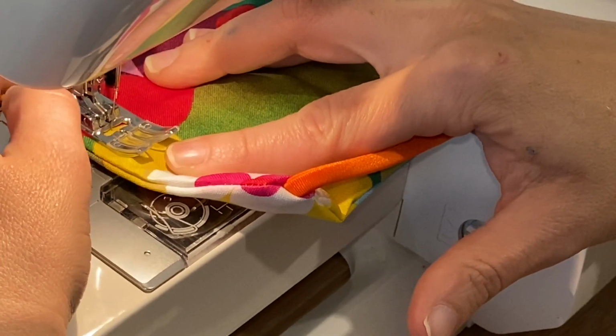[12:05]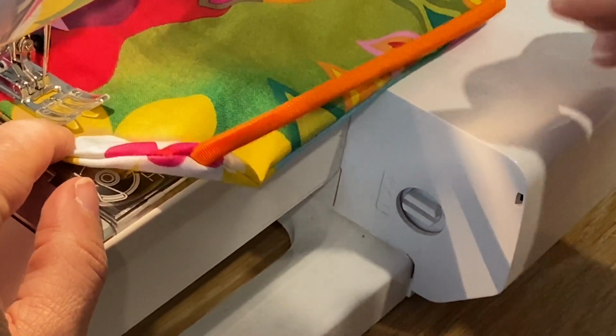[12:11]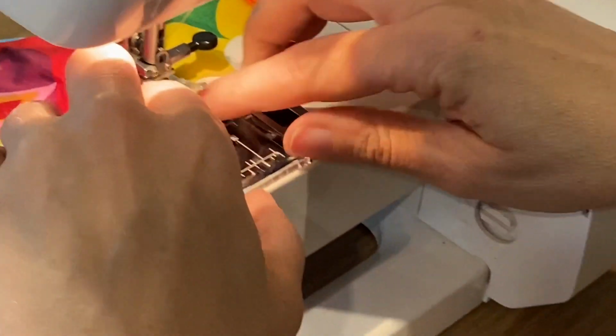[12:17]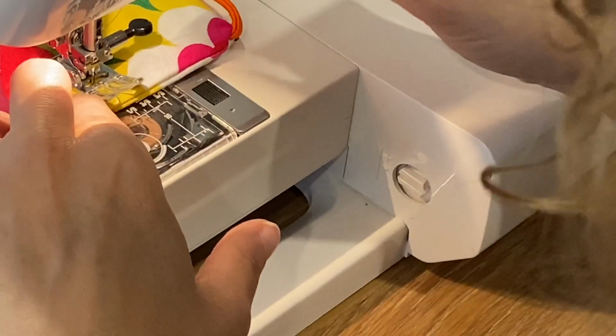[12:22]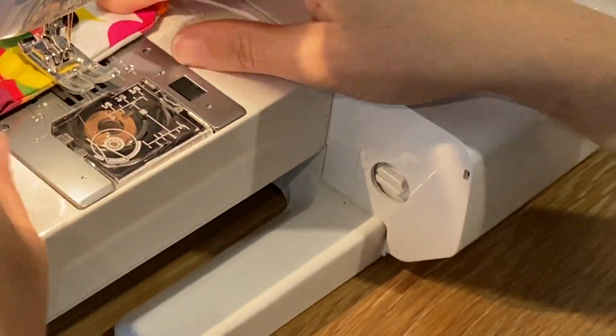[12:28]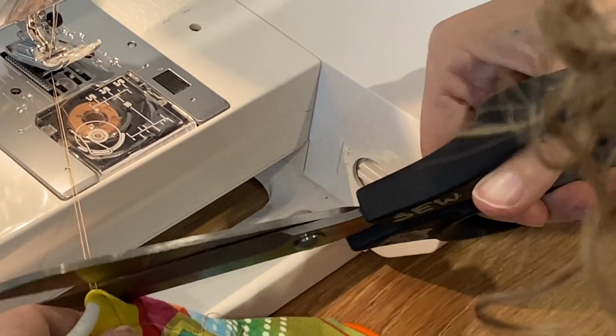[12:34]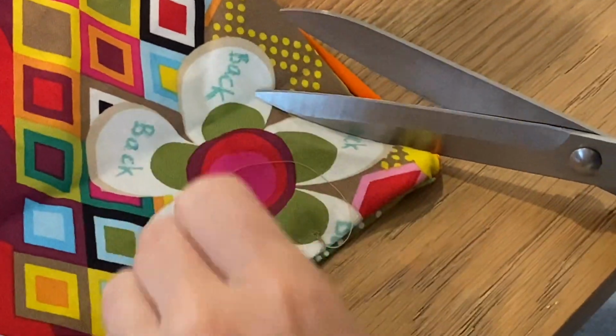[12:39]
Just gonna pull my threads out. Okay, I'm gonna slow that down. Drop my needle. I'm gonna turn it so I can sew down to the end of the piece, which is right about here. So I'm going to hold it. Again, feel free to use pins. Okay, now I'm going to pick up the piece a little. Okay, end of the piece is right here, so I have to go a little further. Okay, it's not pretty, but that's not what these are about. It's about being fast and making something that works.
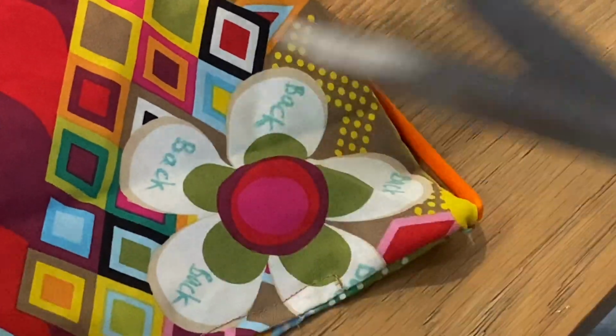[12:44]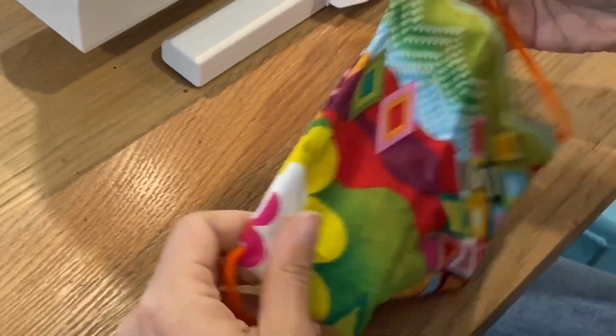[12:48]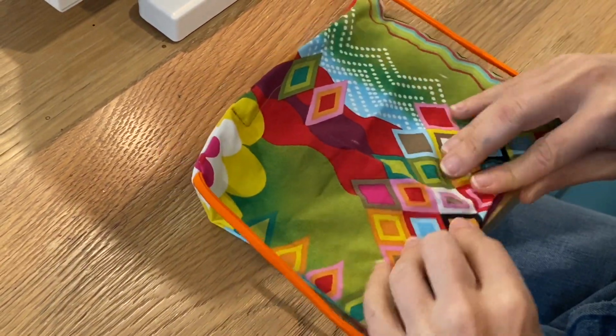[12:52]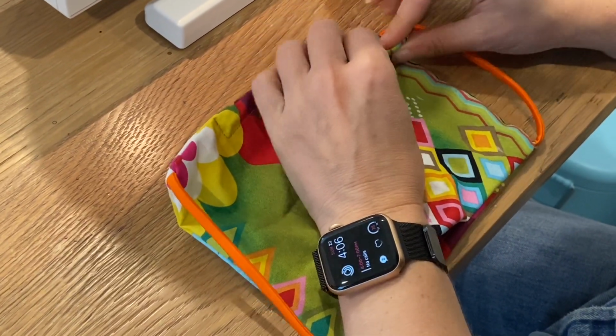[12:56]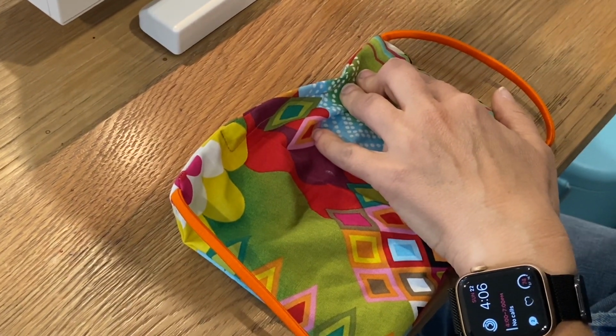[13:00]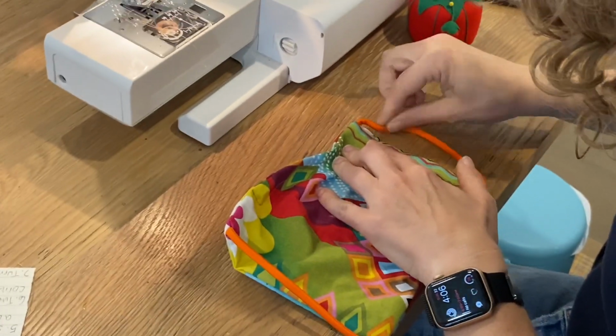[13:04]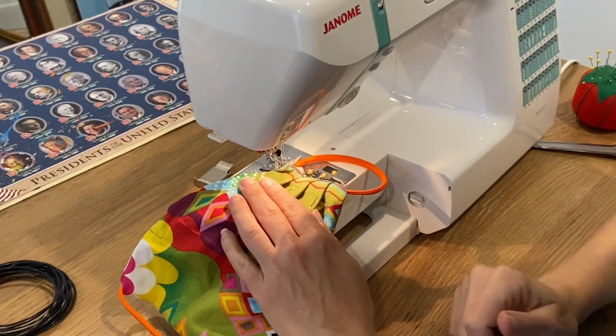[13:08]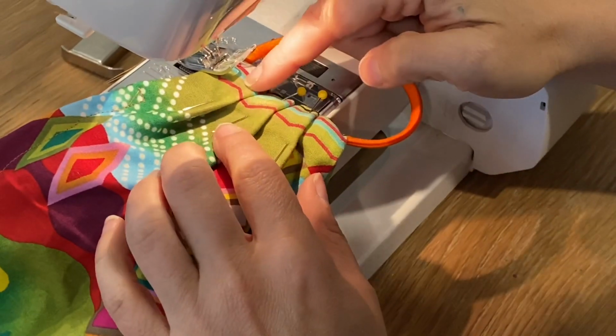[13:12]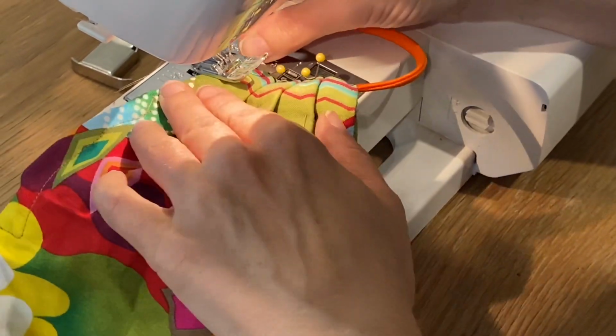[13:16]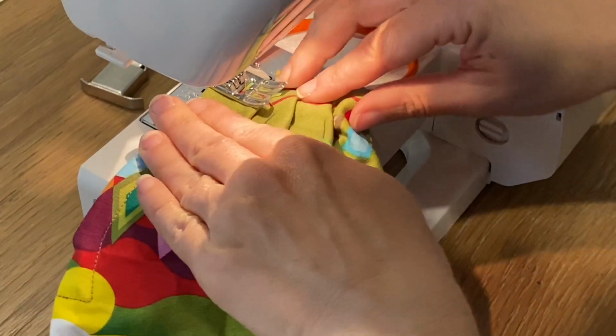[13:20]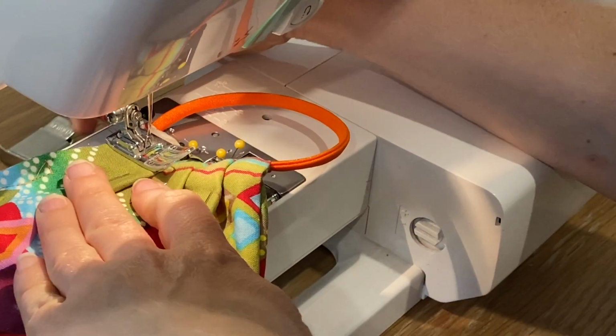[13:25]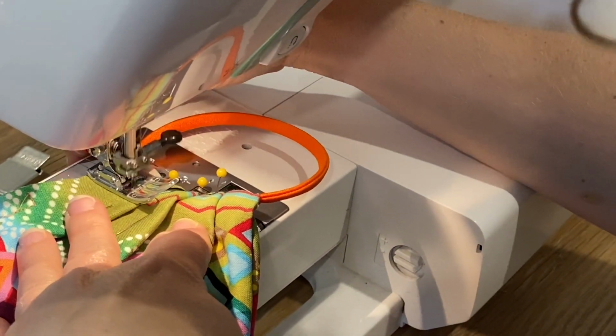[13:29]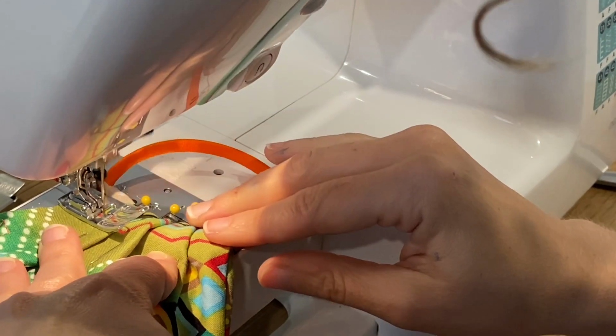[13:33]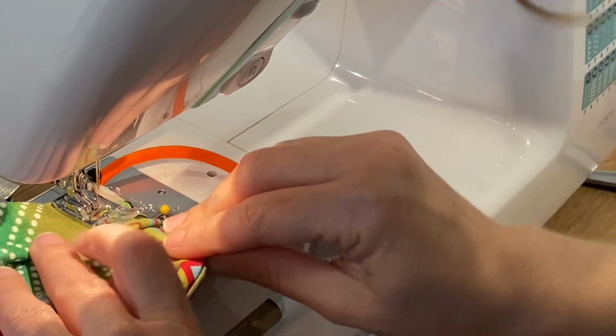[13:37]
Now I'm going to add the pleats. Since this is the back of the mask, I'm going to make the pleats on the front. So I'm just going to take a little bit of fabric and fold it over. The first one's always the easiest. I'm going to pin it. Okay, so I pinned 2 more pleats just like I pinned the first, and now I'm going to sew them into place. And I'm just going to finagle that under there. Back stitch to lock in my stitches. Pull out my pins as I go.
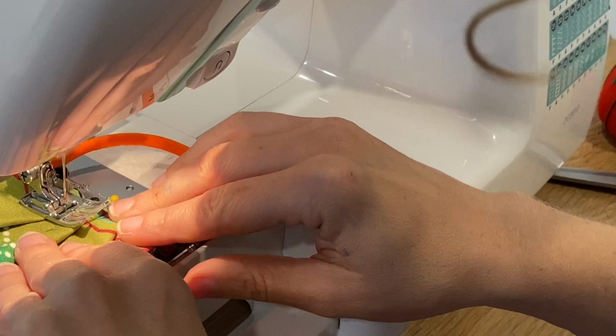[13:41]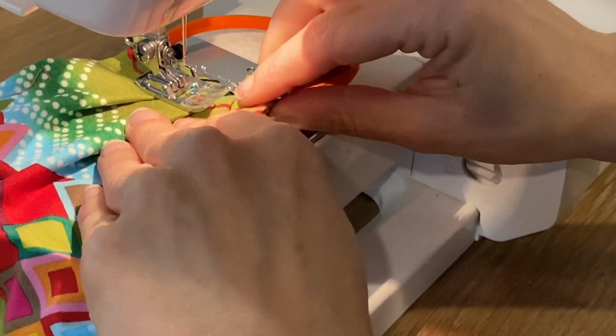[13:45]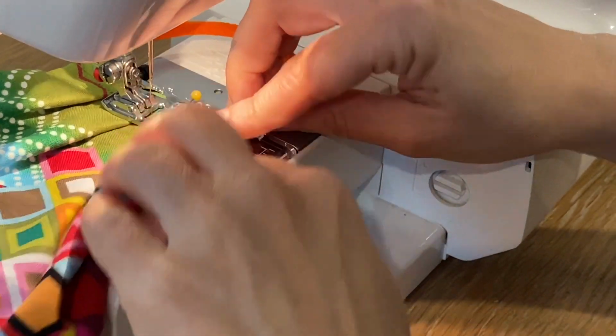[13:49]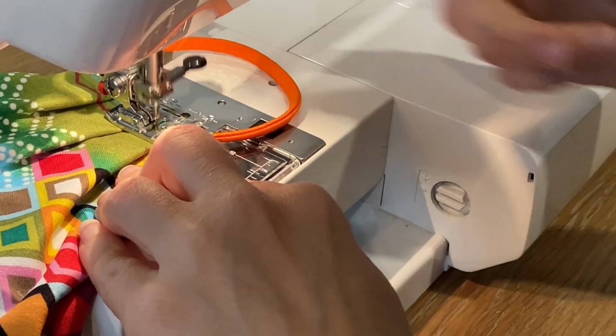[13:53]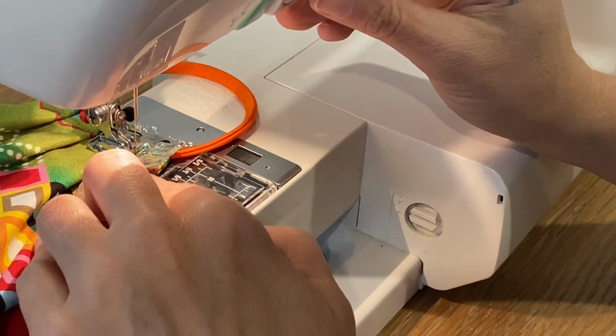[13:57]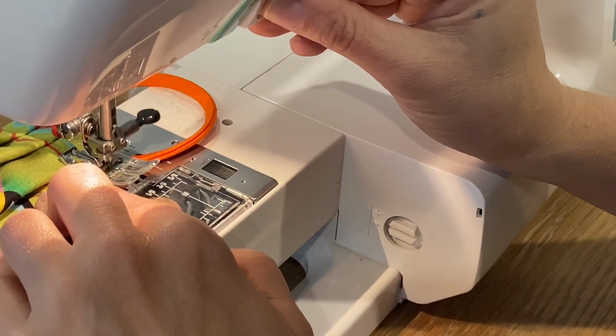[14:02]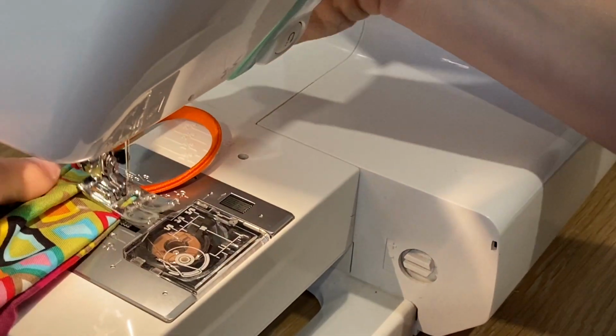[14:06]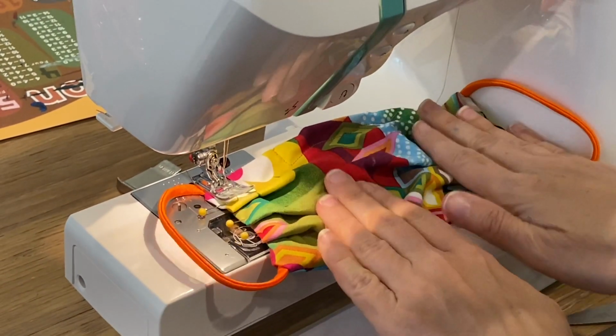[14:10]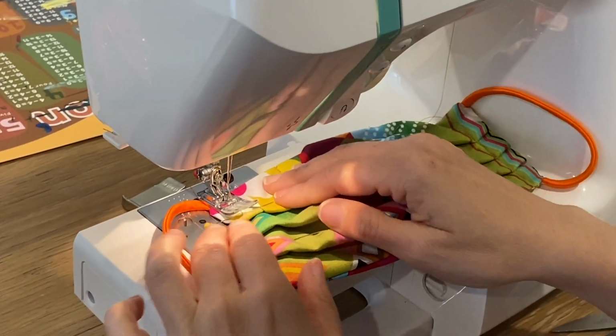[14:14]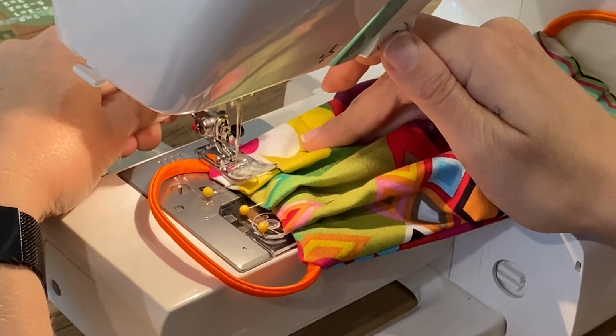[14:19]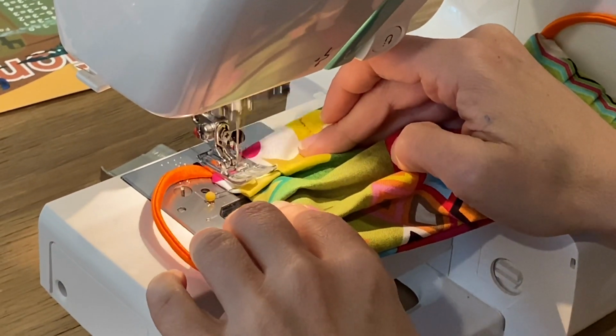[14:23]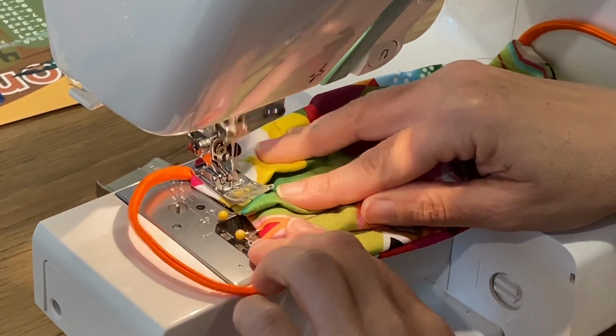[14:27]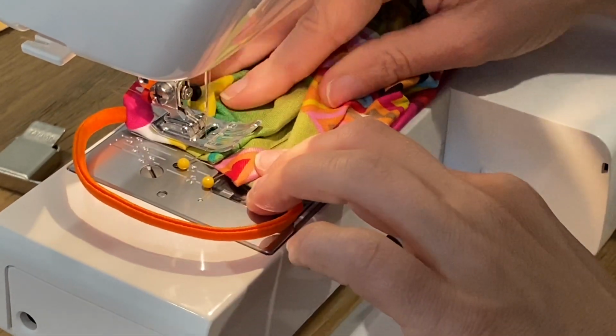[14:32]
Then I'm just going to repeat the same thing on the other side. Also, I'm going in the direction that the pleats are laying because it's easier for the sewing machine to get over them. So when you do the other side, it's a little bit more tricky, but not really. Okay, so for the other side, I've just done the same thing, but I've put the mask inside so that I can still sew in the direction of the pleats. Same seam allowance, more or less. If this makes you feel uncomfortable or that you find this too hard, just... Okay, so I finished sewing the pleats.
My husband had to stop videotaping me because my 7-year-old fell.
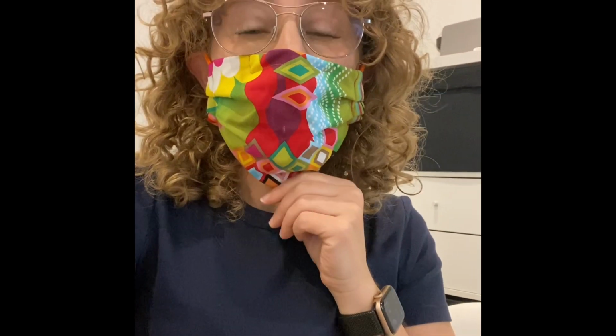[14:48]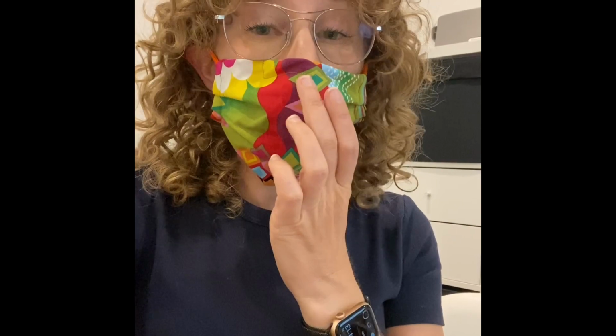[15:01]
But as you can see, I now have a nice mask. This one fits me a lot better. It's smaller, so I think that if you are making them for someone bigger or for adult men, you may want to make it a little bit longer. This was 18 inches, so you might extend it a little bit.
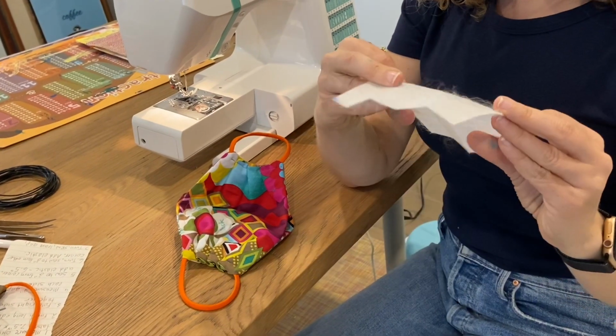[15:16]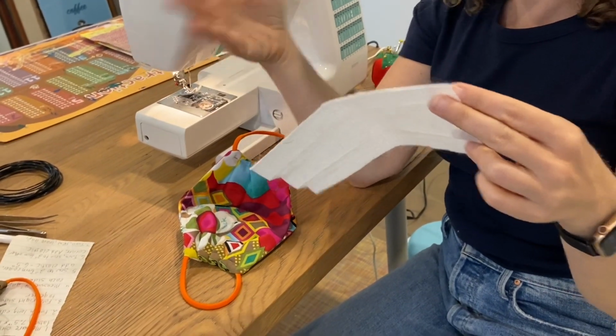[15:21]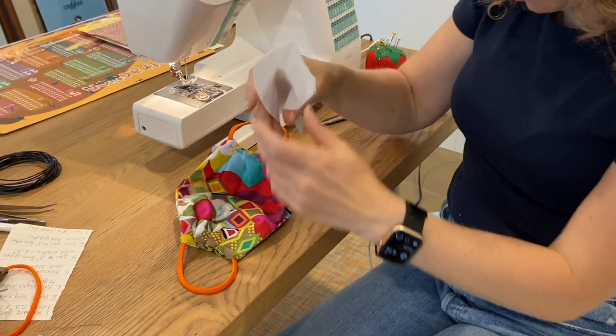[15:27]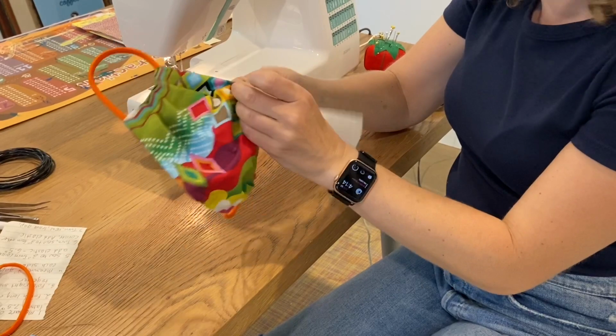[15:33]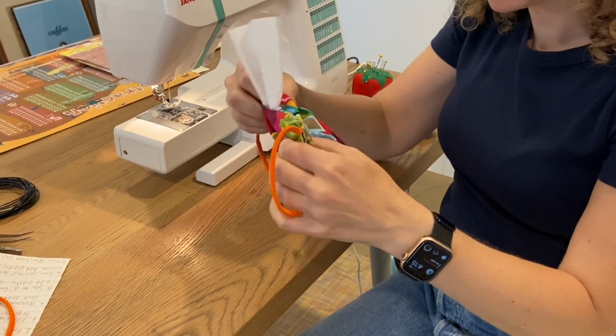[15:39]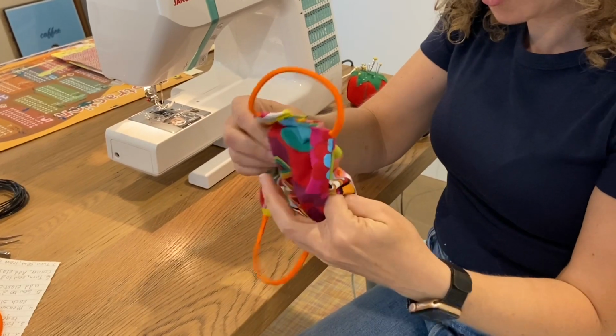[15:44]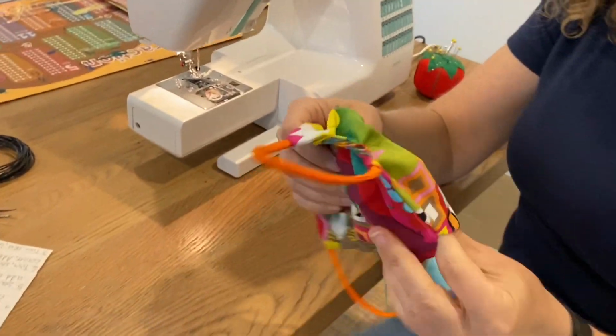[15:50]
Now I'm going to show you how to put in the filter. I cut out a piece of that filter by measuring the mask and making it a little bit smaller than the dimensions of the finished mask. The opening at the bottom is where the filter is going to go. Unfortunately, I think I made it a little too small, so I would leave maybe more like a 3-inch gap. Getting it in is not that hard. What's harder is spreading it out and getting it to lie flat. It just takes a lot of maneuvering.
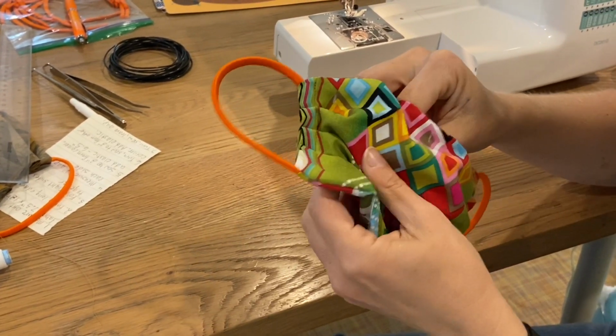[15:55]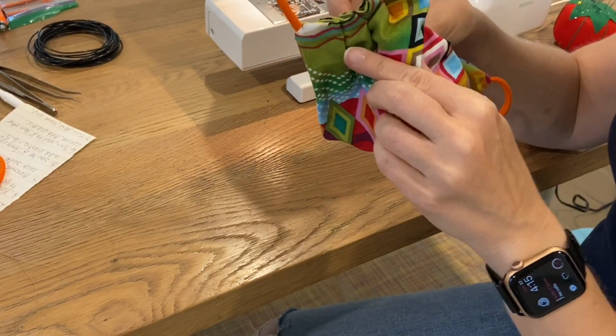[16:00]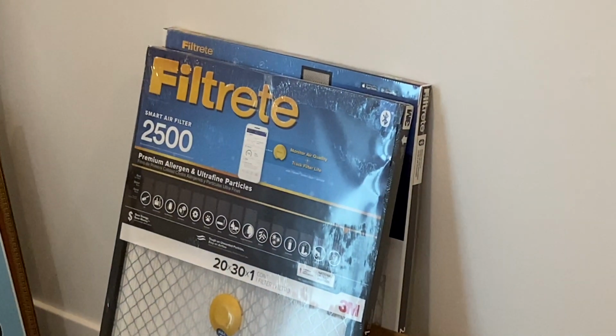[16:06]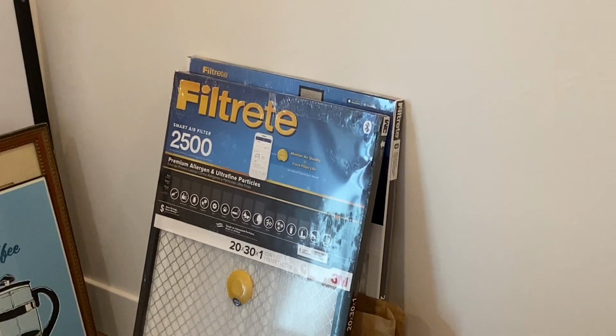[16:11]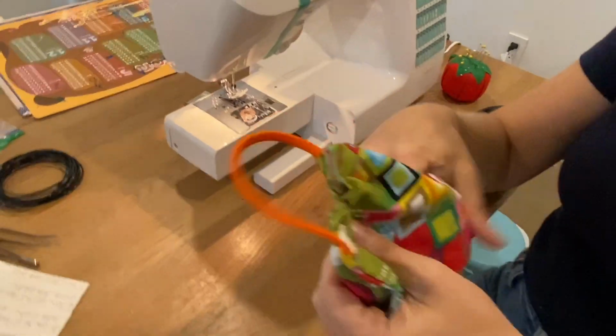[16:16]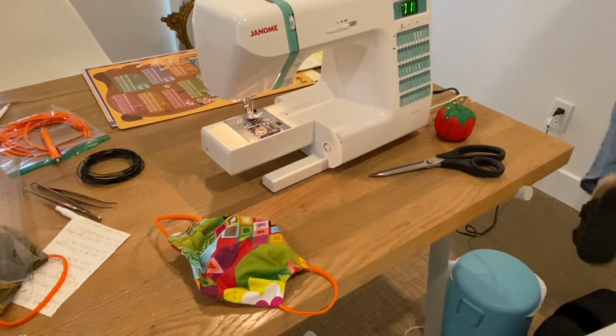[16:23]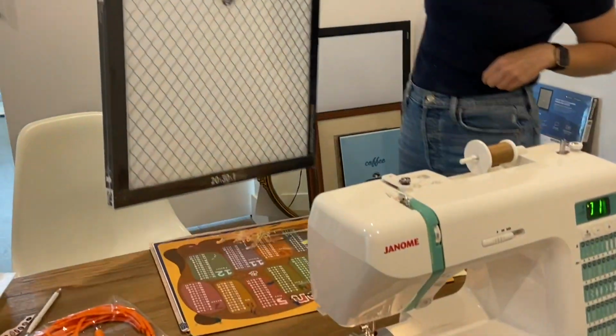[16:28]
But once you do, this should be a mask that can be washed. And the filter, if you buy one of those packets, it's $25 and it comes with a lot of material. It can be used to make a lot of individual masks with one filter, or you could cut a lot of filter pieces out of it. Getting the filter out of that container though is actually pretty time consuming. It was the most time consuming thing I did.
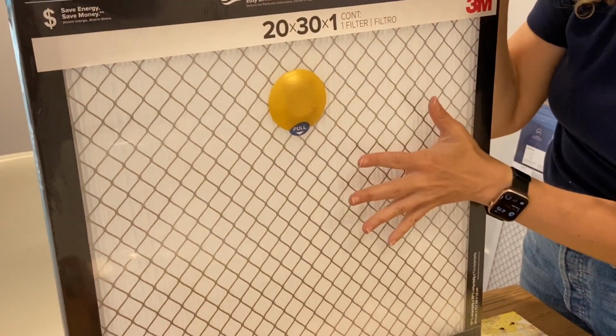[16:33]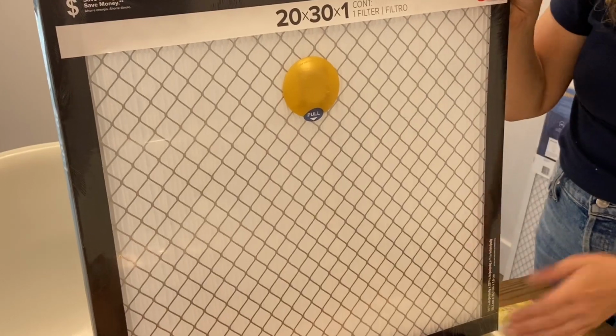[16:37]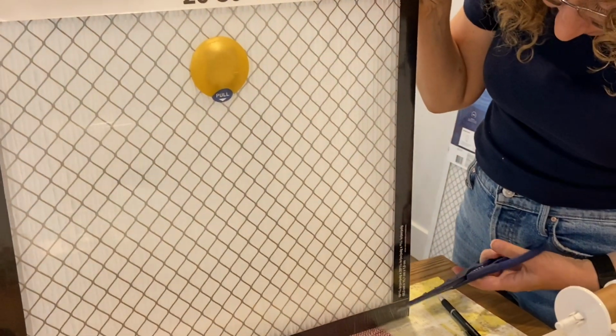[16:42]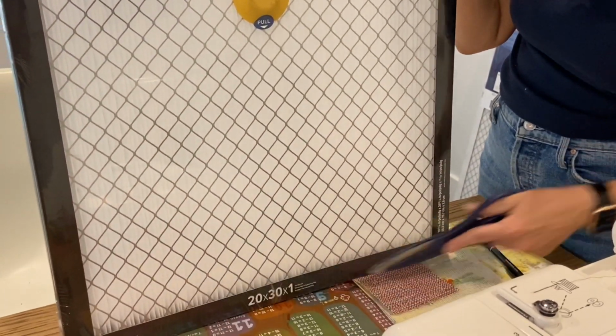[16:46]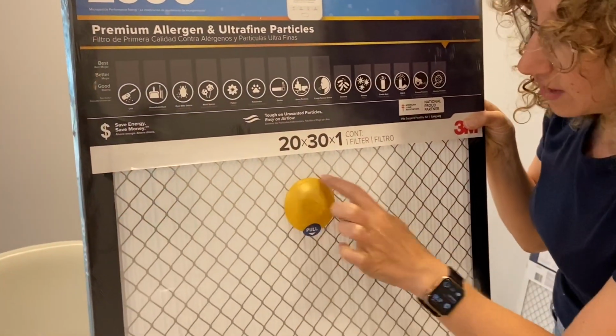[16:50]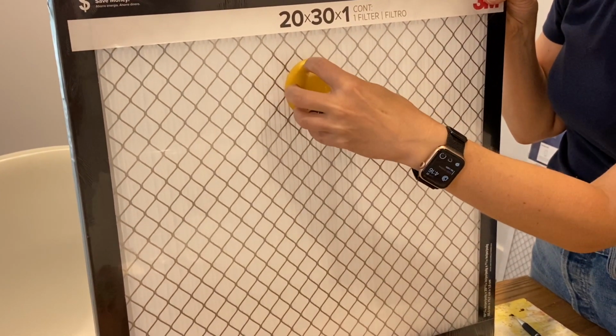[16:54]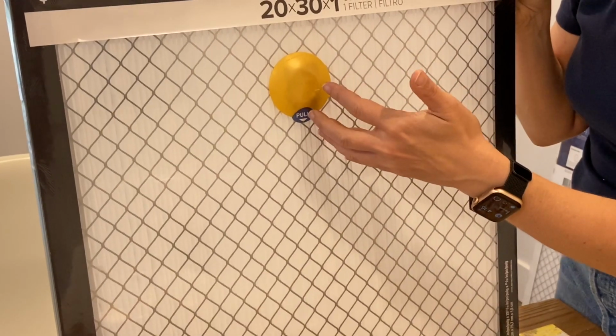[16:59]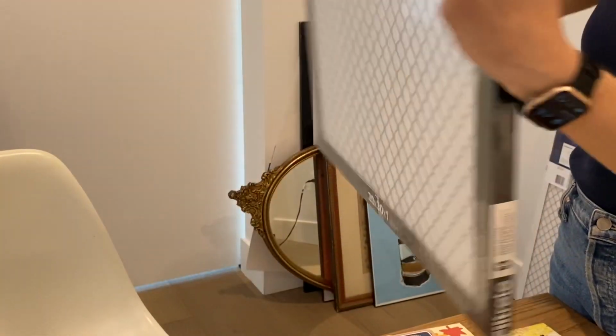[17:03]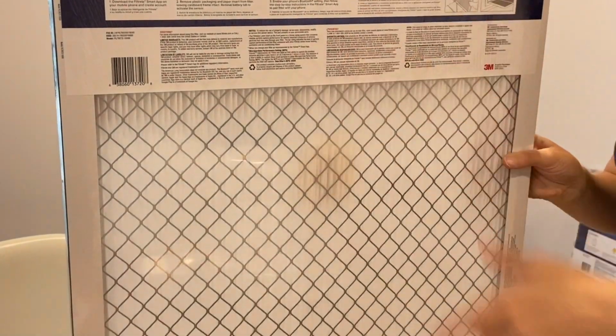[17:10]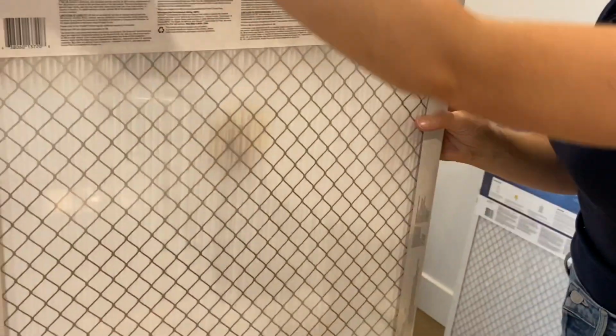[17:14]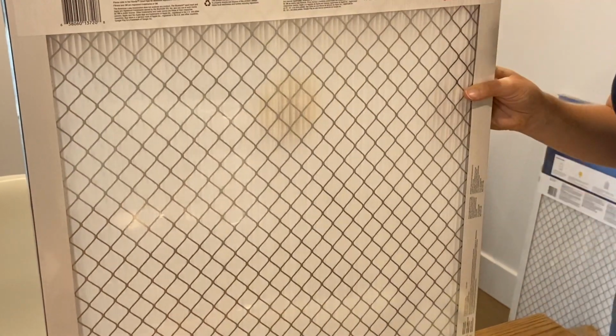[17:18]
Basically, there's this metal grating that's kind of adhered to the filter. What you have to do is take a pair of scissors that you don't care about, and clip the little wires. And you really do have to do this side, and this side. Then you can peel it off. This thing, unfortunately, is stuck on there pretty solidly, so you kind of have to tear that off. I was able to do it without tearing the filter, but I won't use that part of the filter in a mask. Then you have to do the same thing on the other side. Clip, clip, clip, peel. Then I would take fabric scissors that are sharper and cut out the filter. And that's it.